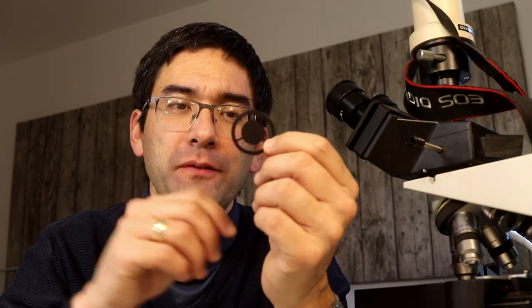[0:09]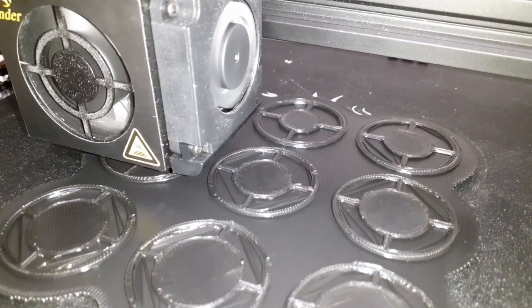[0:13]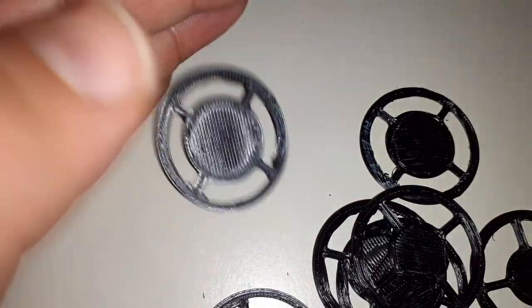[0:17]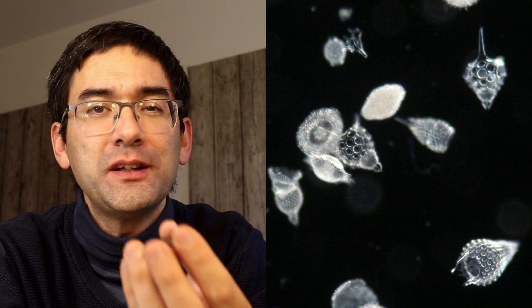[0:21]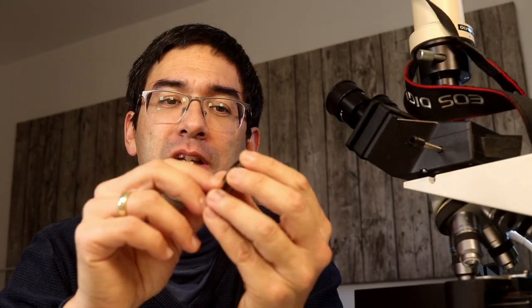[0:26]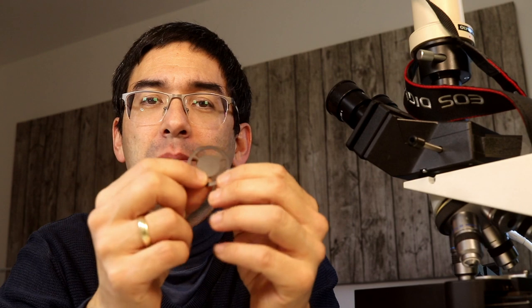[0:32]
And today I want to optimize this filter, and I'm going to be using some 3D printing to try out different sizes and dimensions to find the optimum one. Before I do that, I want to give you a short introduction into what Darkfield is in the first place, for those of you who don't know. And I'm also going to explain a little bit of the theory concerning how the size here determines the quality of the image, and then later on I'll be optimizing the filter here.
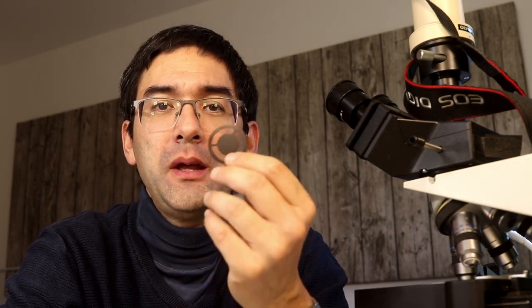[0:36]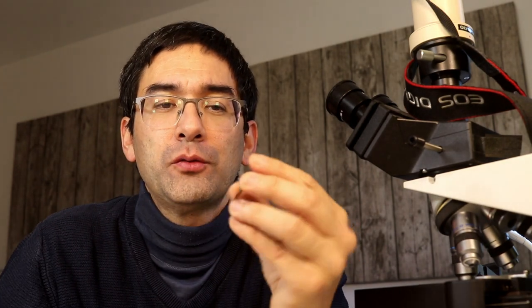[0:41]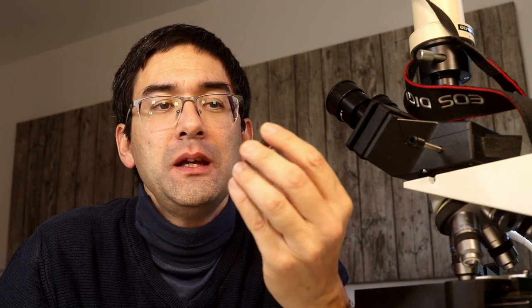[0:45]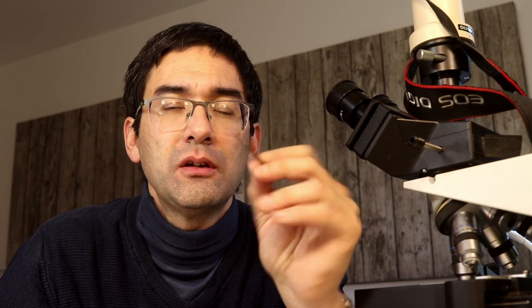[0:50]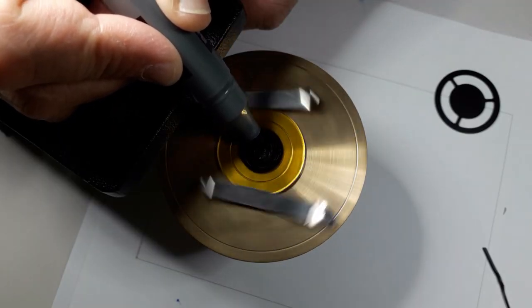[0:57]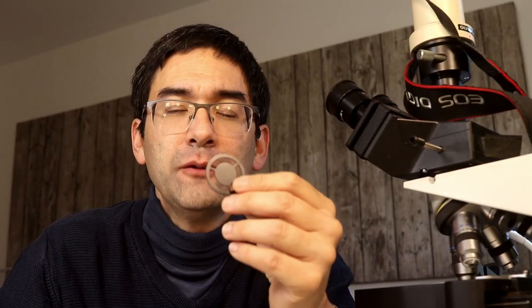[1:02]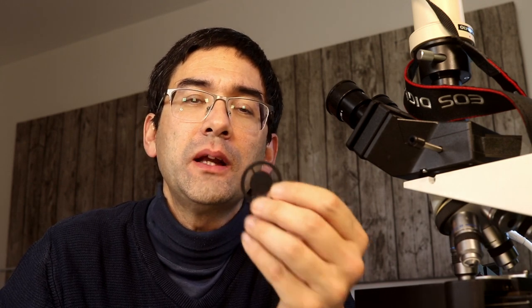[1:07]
So first of all, a dark field patch stop is one of the easiest modifications that you can do to a microscope, and I think every microscope owner should have one of those. If you don't have this, you can easily make them yourselves, either using cardboard or using some black plastic or so. And I made another video that explains different methods, and the link to this video is below. But today I want to try yet a different method. I want to 3D print them, and this way I can very quickly make a large number of them, and I can try out different sizes here.
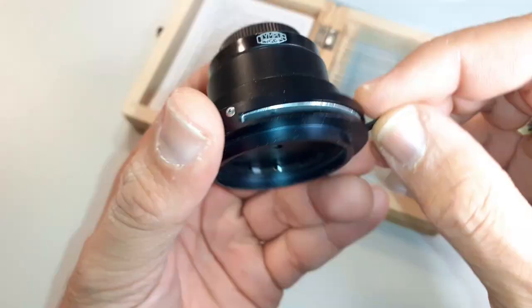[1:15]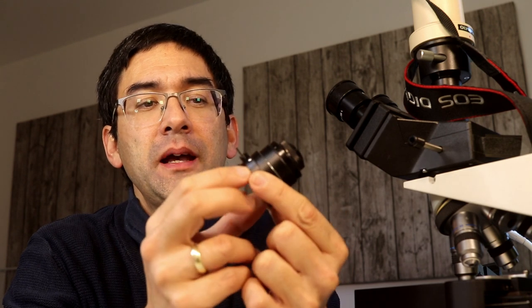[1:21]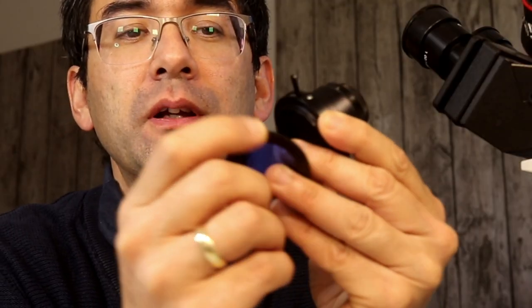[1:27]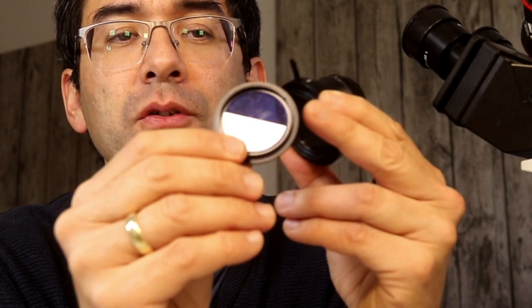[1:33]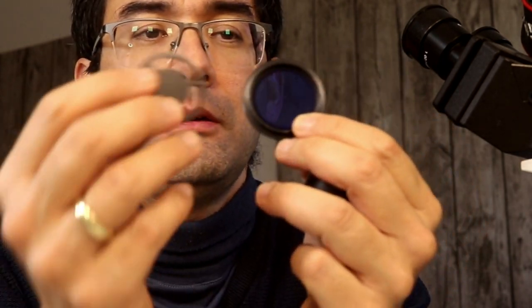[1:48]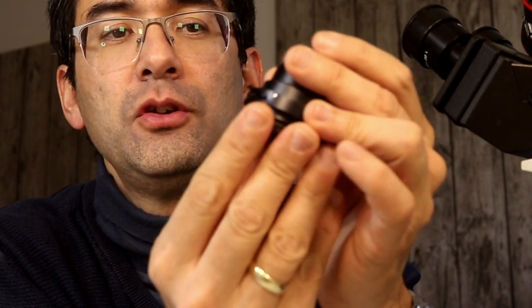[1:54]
So how does this work? What you have here is a microscope condenser, and you find them beneath the stage of your microscope. At least the slightly better microscopes have that. And many of these condensers have either a push-on or a swing-out filter holder. And you can see I can take this out here. Okay, so that is the filter holder. It's blue here to simply reduce the amount of red light that goes through to the camera later on, and it also gives it a little bit more neutral color balance. And in this filter holder here, you can place any variety of different filters and also patch stops, and you just place it in here and you pop it on again, and then you're ready to go.
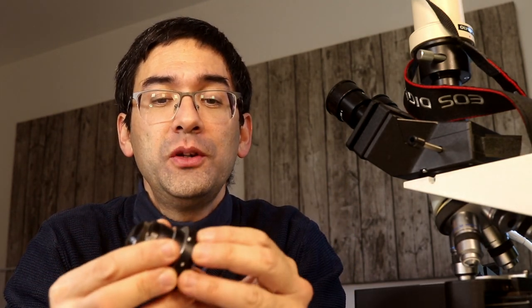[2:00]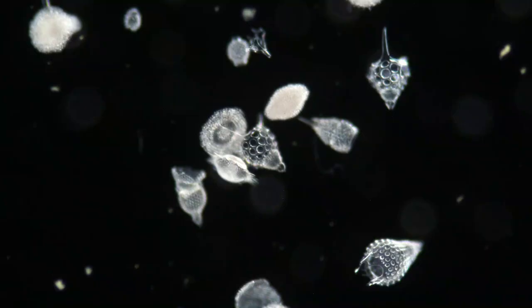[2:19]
And I'm going to show you now how the image changes when you add a patch stop filter. So this picture here shows some radiolarians in regular bright field, and you can see that the radiolarians are dark on a bright background. And when you put in the patch stop filter, the dark field filter, then you can see that the radiolarians start to light up on a dark background.
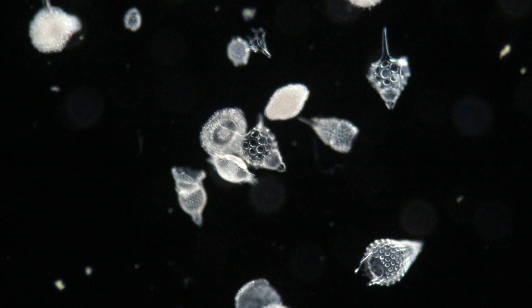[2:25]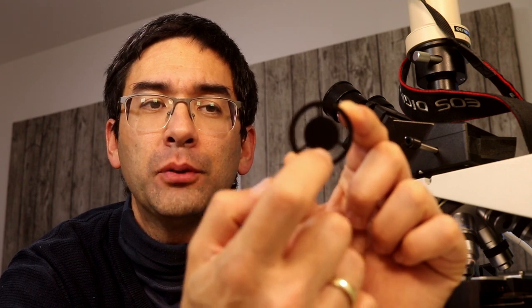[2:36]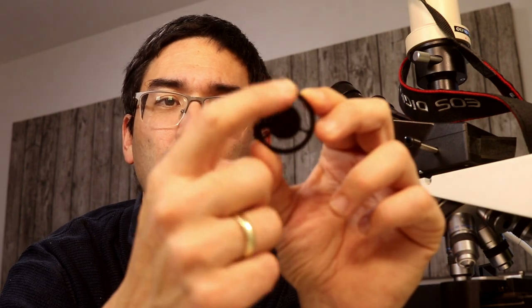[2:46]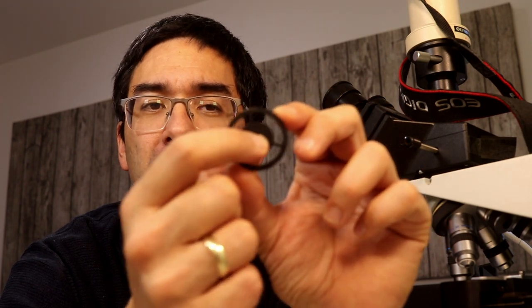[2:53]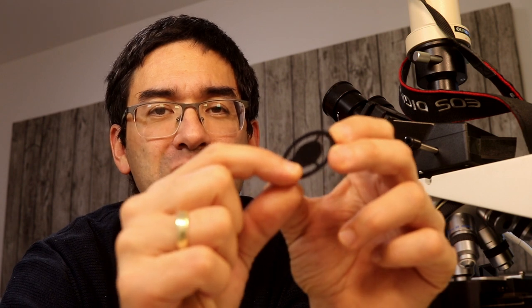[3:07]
So, well, how does this now work? When you look at one of those dark field filters, you're going to see that they have essentially two regions: the central patch stop, which blocks out the main microscope light, and the peripheral annulus. That's this bright part that allows light to go through. The ring here on the outside actually is only there to center the patch stop in the filter holder. It has no real function otherwise. And now what happens is that the central patch stop here blocks out the main microscope light so that the background becomes dark. And the light which strikes the specimen from the periphery is then reflected back into the objective, and that then causes the specimen to light up on a dark background.
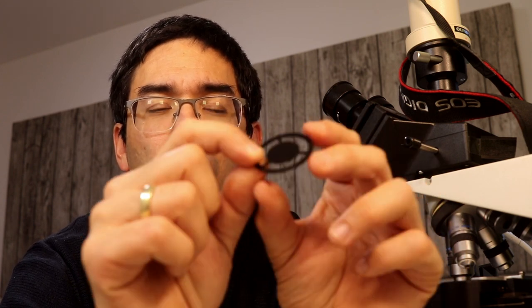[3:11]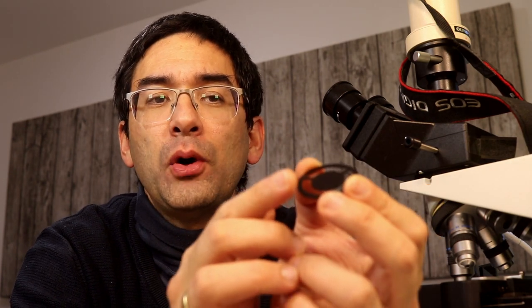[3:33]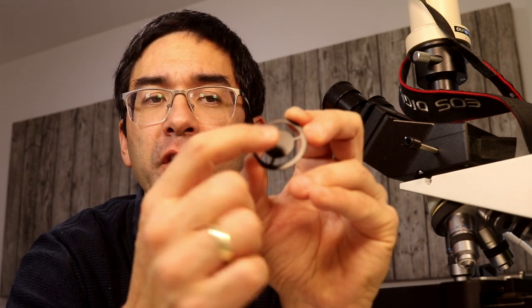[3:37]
And now maybe you're wondering how it's possible for the light which is here on the side to actually hit the specimen, which is located here over the center of the filter. And that is because there is a condenser in between, and this condenser has a lens here, and this lens causes the light rays not to go parallel but to bounce off at an angle. And that's why it's possible for the light to also reach the specimen, which is actually directly over the central
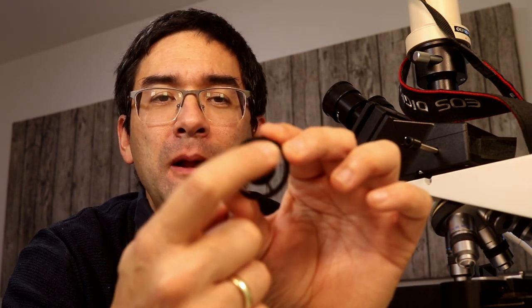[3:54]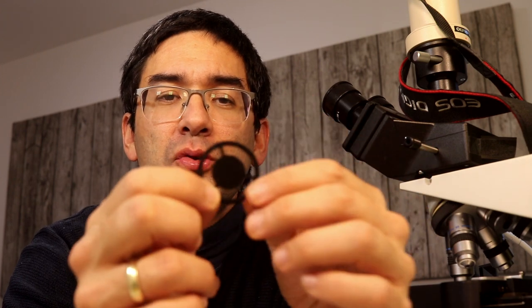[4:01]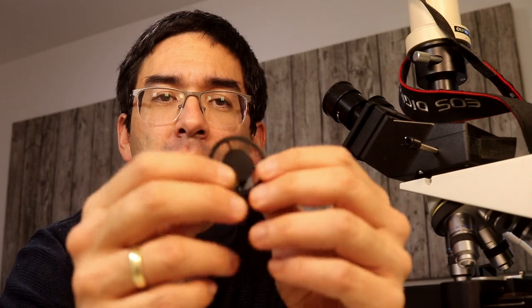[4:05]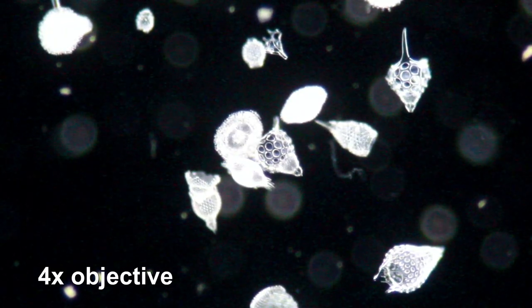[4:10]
black patch stop. However, there is a problem, and one of the problems is that the optimum size of the filter here, of the patch stop, also depends on the so-called numerical aperture of the objective. So this basically means that the higher the magnification, the larger the central patch stop has to be in order to completely block out the light. And I'm going to simply show this effect to you now. So I'm going to use this commercial dark field filter here. And I'll be increasing the magnification from 4 times all the way up to 60 times.
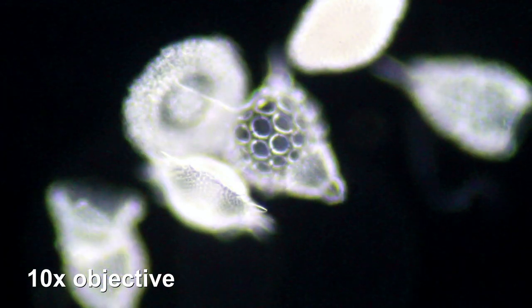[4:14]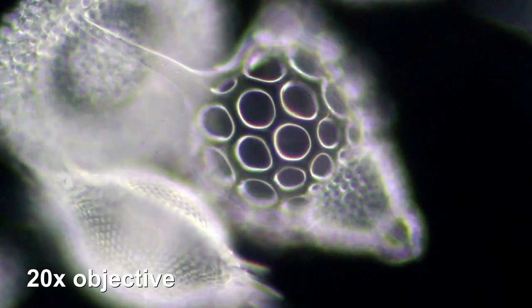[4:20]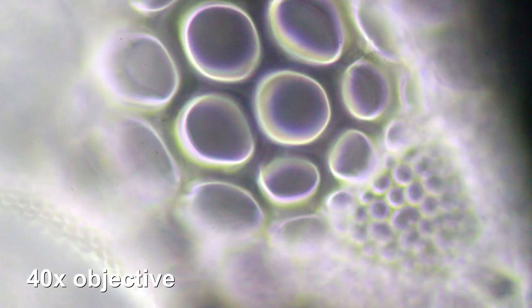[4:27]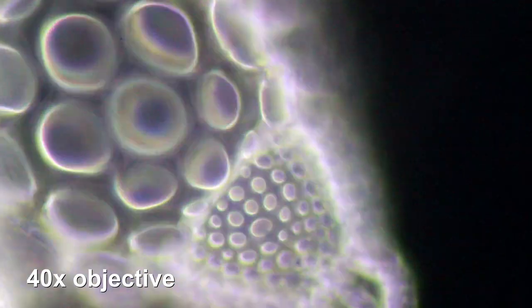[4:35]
And what I want you to do is look at the background, whether the background is still sufficiently dark. By the way, these are radiolarians here, and their refractive index is quite different from the surrounding medium, so that's why they shine up very nicely and they're very good specimens. Okay, so that's with a 40 times objective, and look at the top right corner. Yes, here you see that the background is still sufficiently dark.
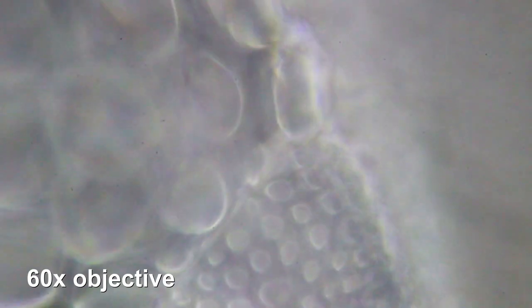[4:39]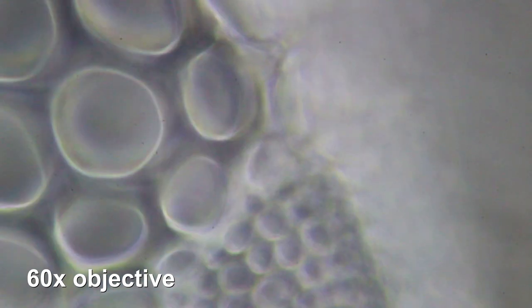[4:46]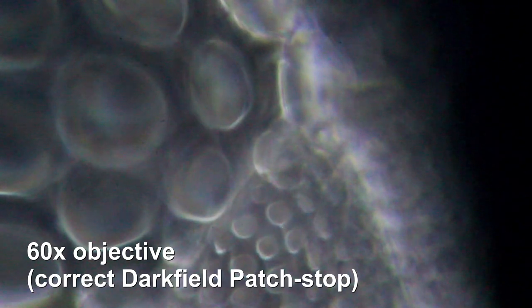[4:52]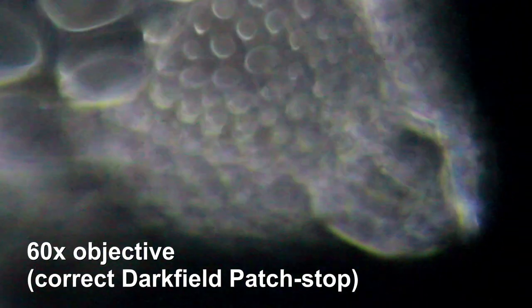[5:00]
So the patch stop filter does still work with a 40 times objective, but now with a 60 times objective, this is basically where it breaks down. The top right corner, as you can see, is now gray. It's not black anymore. And now with a correct patch stop, the one I made, it shows that it's black. That's the way it's supposed to be, but it's a different patch stop, one that is a little bit larger in the center.
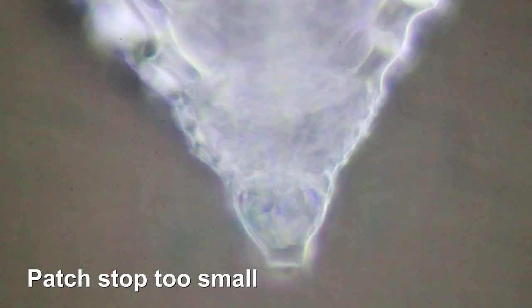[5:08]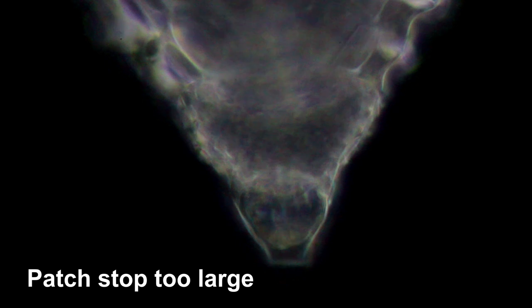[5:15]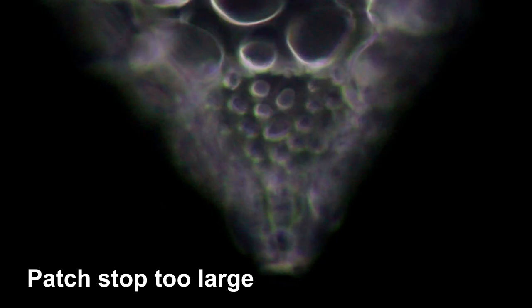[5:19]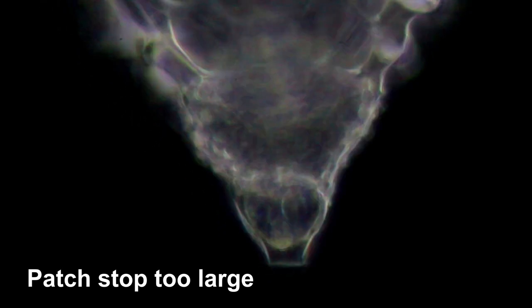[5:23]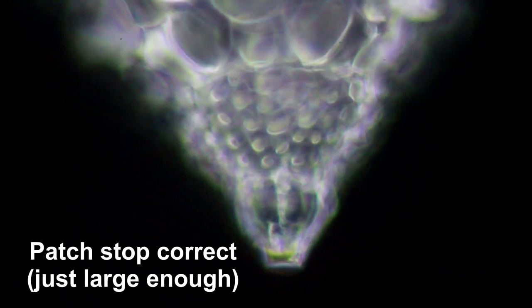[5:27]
We're going to try it again. This one shows one where the patch stop is too small. The background is pretty bright. I'm focusing back and forth a little bit here so that you can see this better. This one, the patch stop is too large, and the specimen itself, while you can see the tip of the radiolarian, is still too dark. And when you make the patch stop just a little bit smaller, just the right size, but not too small, then it looks like this, okay?
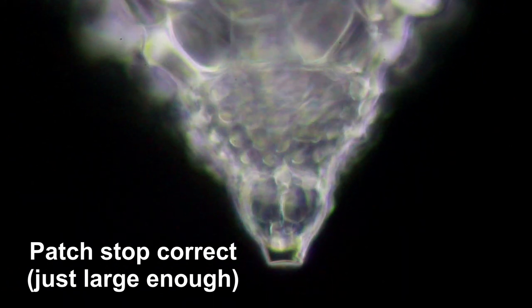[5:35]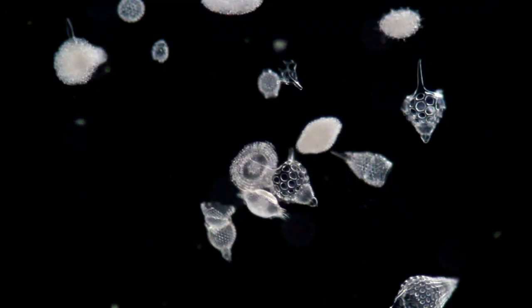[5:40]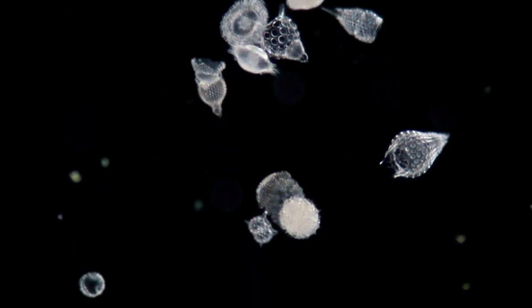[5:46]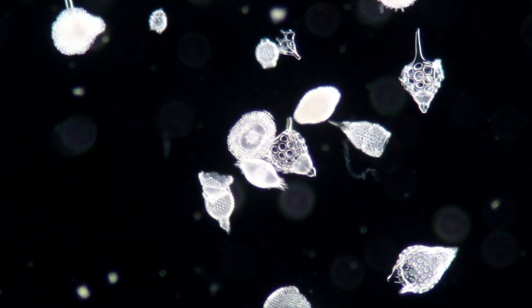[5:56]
And I've done it like this, and I did not adjust the camera settings here, so it did not automatically correct for the exposure. So you can see that the size of the correct patch stop has a significant importance here. Same thing here. Here the patch stop size for the radiolarian specimens is a little bit too large. It looks fine, but the specimens could be a little bit brighter. I'm just going to switch over, and this is basically the way it's supposed to be.
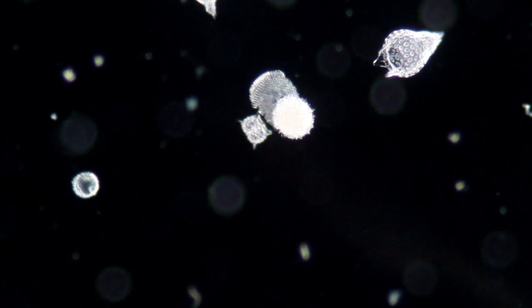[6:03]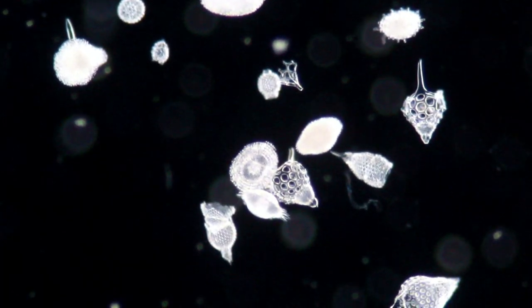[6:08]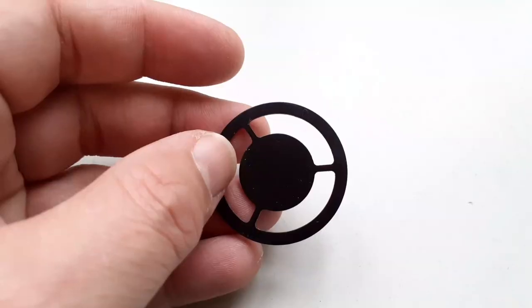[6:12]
So I quickly changed the filter, and you can also see that there are some spots in the background. This also means that there's a little bit more dust visible now, and so you see that there is also a slight disadvantage of actually seeing a little bit more.
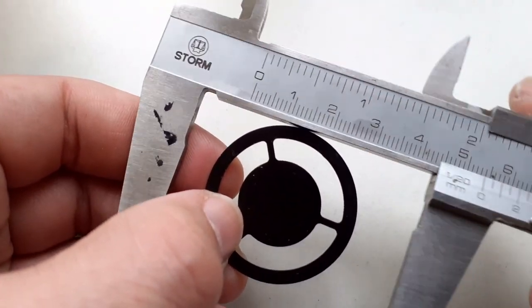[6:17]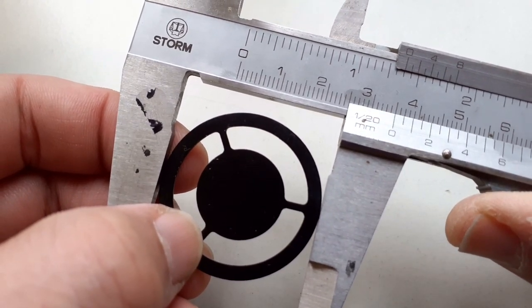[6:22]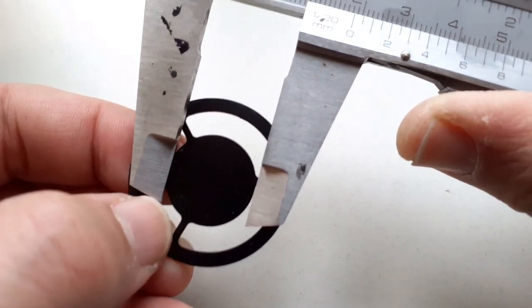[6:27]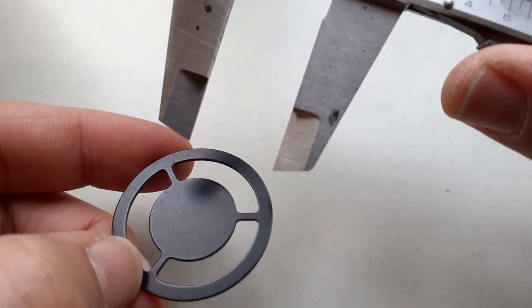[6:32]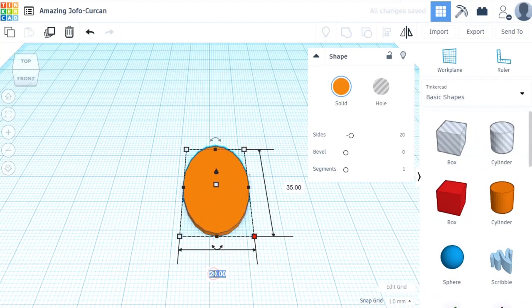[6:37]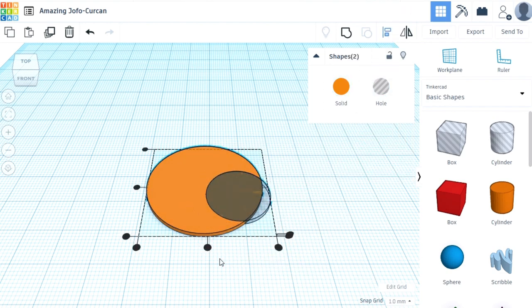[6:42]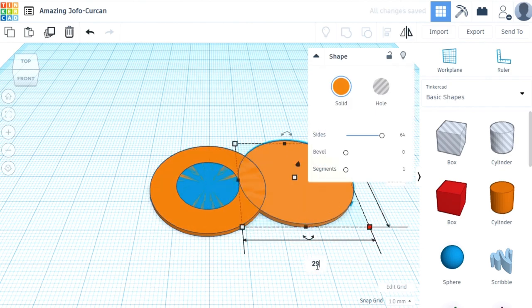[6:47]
Well, that was the commercial patch stop filter, and now I wanted to design my own. I started out by simply using this as a basis, and I measured the diameter and the central patch stop and all of these things simply to have a starting place. Then I designed the whole thing on the computer, using the free online program called Tinkercad. All you need is an account, you sign in, and you can edit things directly in your web browser. It's quite easy to use. I only watched a 5-minute introductory video on YouTube, and then I already knew how to use the program.
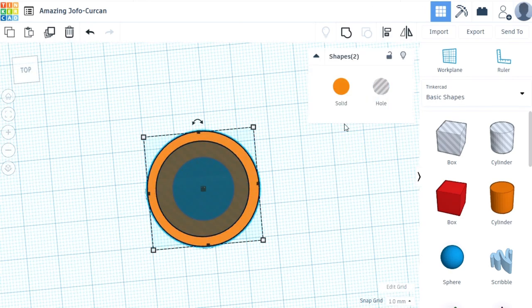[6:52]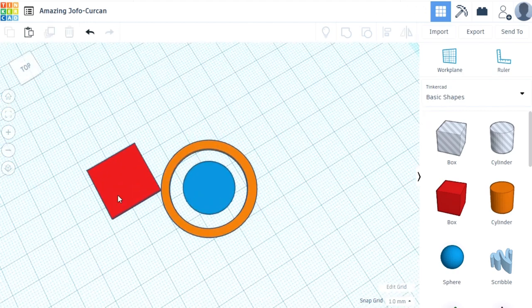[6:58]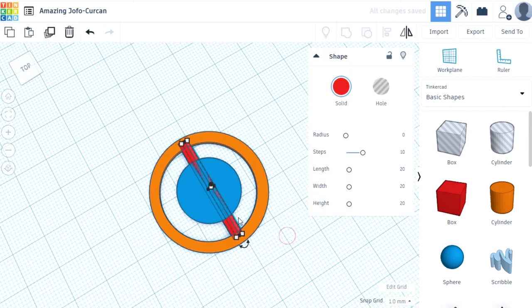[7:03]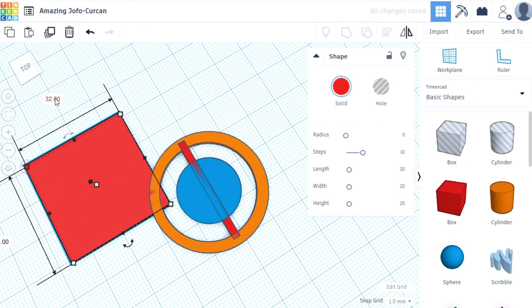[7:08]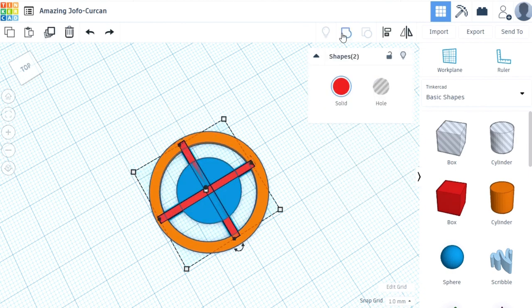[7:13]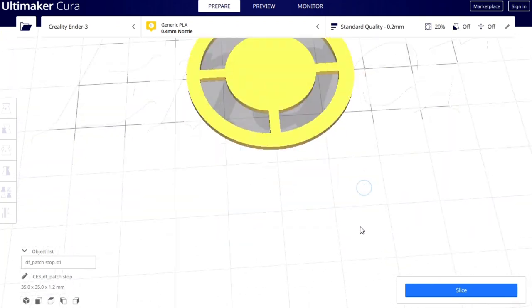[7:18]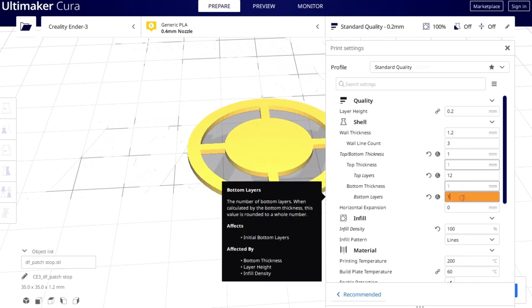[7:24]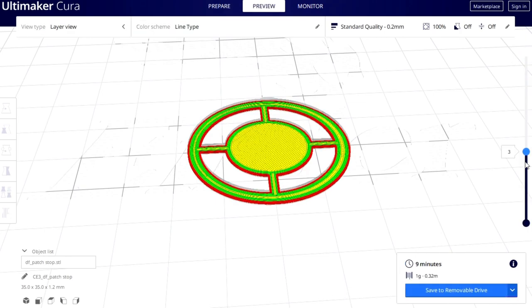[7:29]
I've never done CAD design before, so it's the first time that I'm doing this. I tried to replicate the same filter a little bit, and that's basically how it works. Then you export the file, and the file is imported into a so-called slicer program. There are also several free ones available. One of them also came along with my 3D printer. This slicer program converts the shape into so-called G-code, which is then understood by the 3D printer to be printed. So you see, you have to use two different programs here.
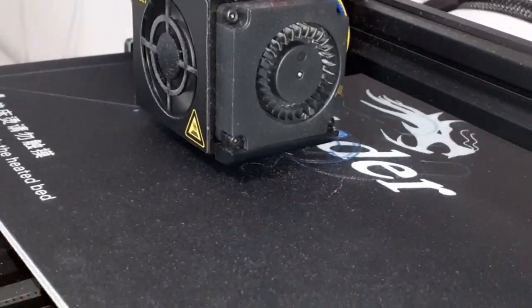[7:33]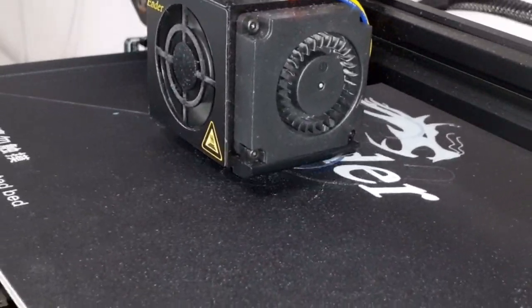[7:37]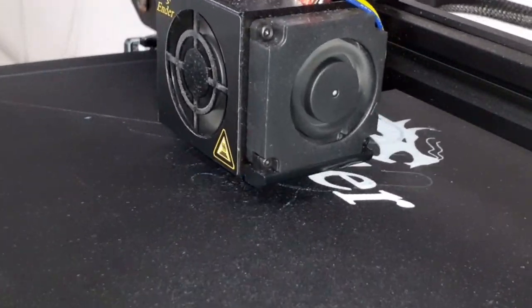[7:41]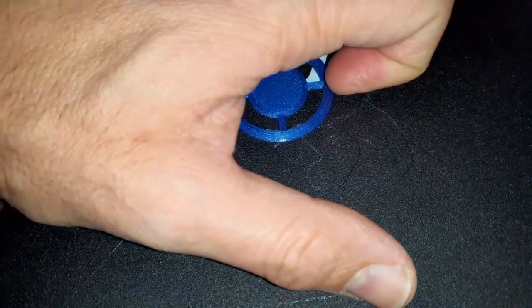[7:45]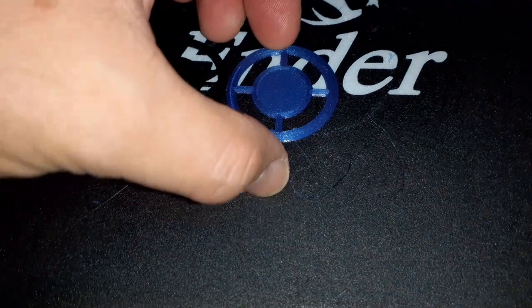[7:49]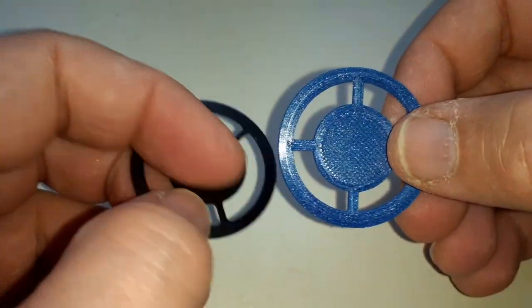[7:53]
I'm now showing the printing in time lapse again. After a couple of minutes, I had my filter ready. And if you're wondering why I'm printing it using blue filament, the reason is simply that it's the one that I had in place right now. I had some problems getting it off, so it took me a little bit. And this is how it looks, and I'm quite happy.
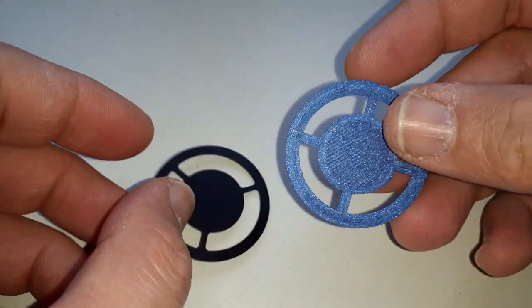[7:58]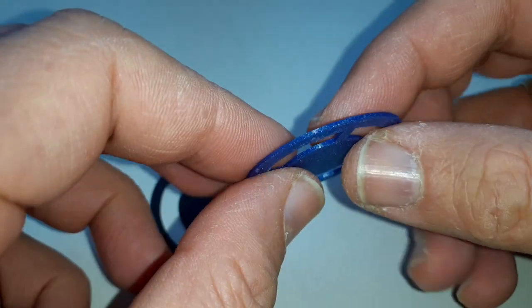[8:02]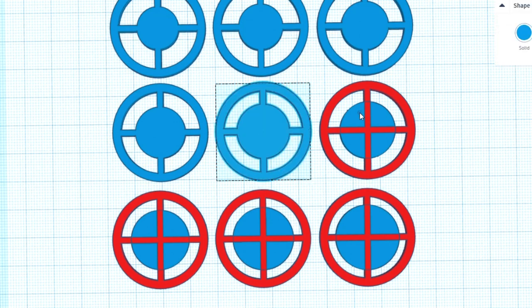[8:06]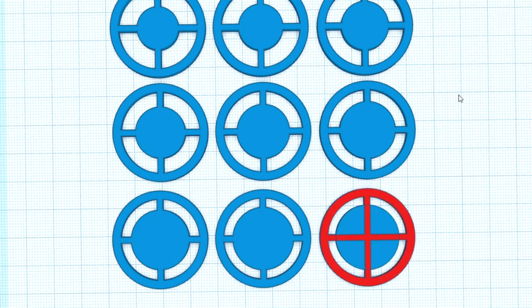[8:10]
So I decided to put it into the filter holder, and I had to make some size adjustments. It was a little bit too big, but I made the adjustments, and then I redesigned all of them again with different sizes of patch stops. And now I've got 9 of them here.
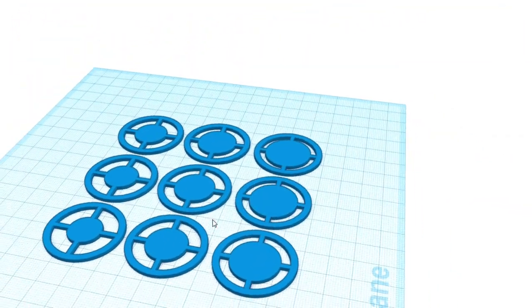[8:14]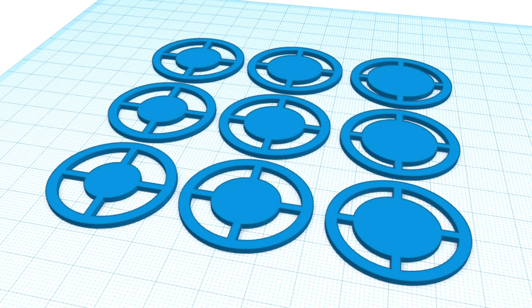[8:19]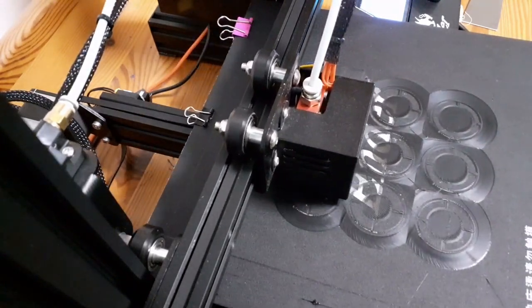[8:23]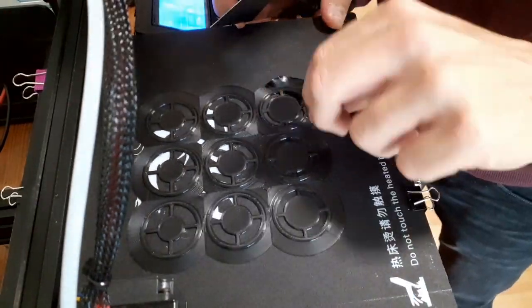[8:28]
And I ended up printing them as well to test out which one is the best one. So here I'm printing all 9 of them. And that's how it looks like after a couple of minutes.
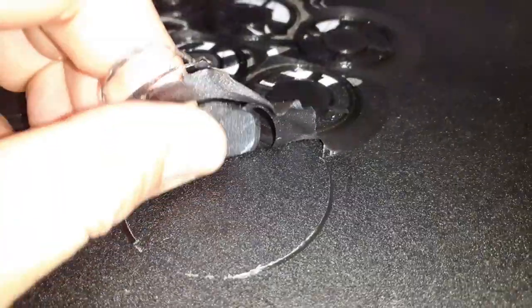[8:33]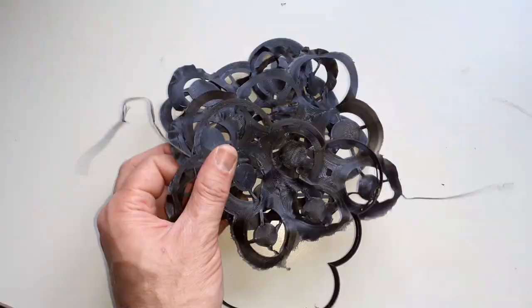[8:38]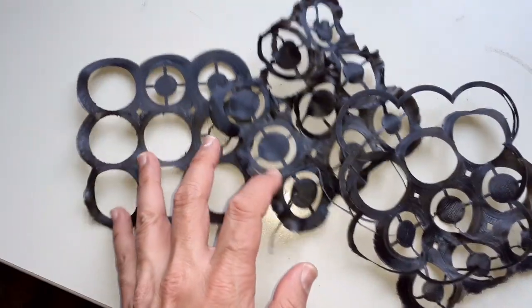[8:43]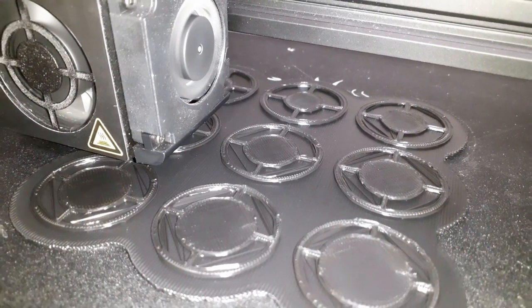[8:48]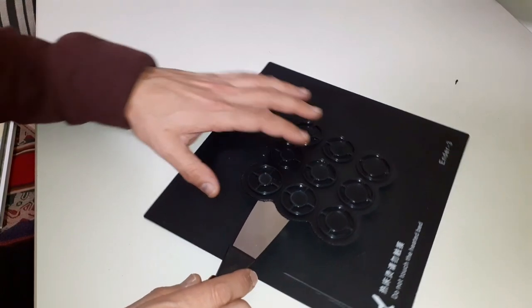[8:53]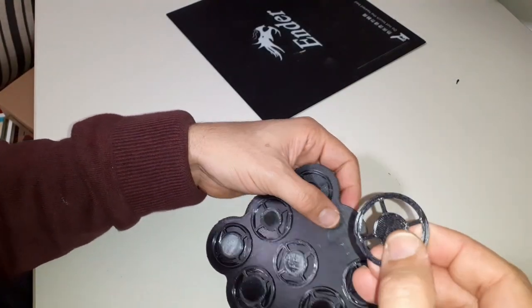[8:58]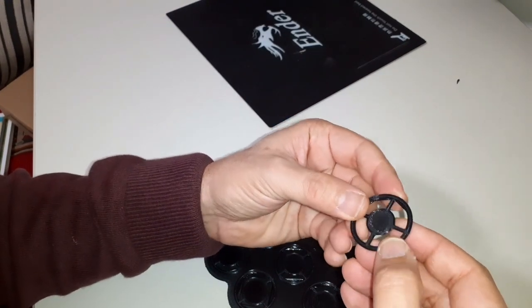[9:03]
And the thing is that I was a little bit not so successful because I had some problems actually getting it off. So I had to reprint everything again a little bit, so this one did not really work very well. So I had several problems and several mistakes and several tries I had to do until I found the correct way. Yeah, this one here, that was actually the one that worked. I printed it on a raft, and this went off quite easily, and it could separate the filters much more easily here. Yeah, and then I simply put them in and tried them out, okay?
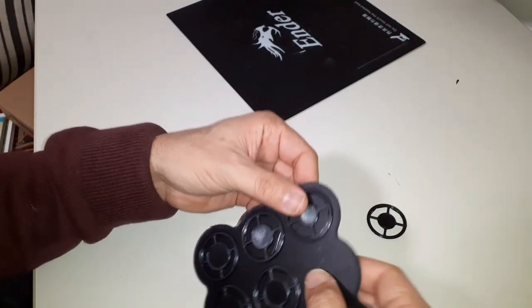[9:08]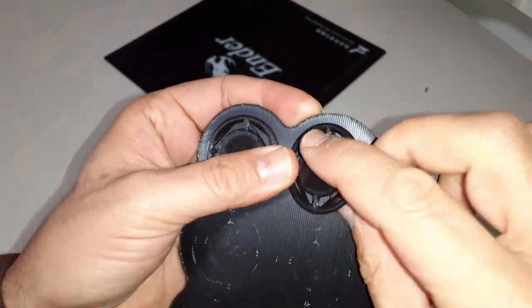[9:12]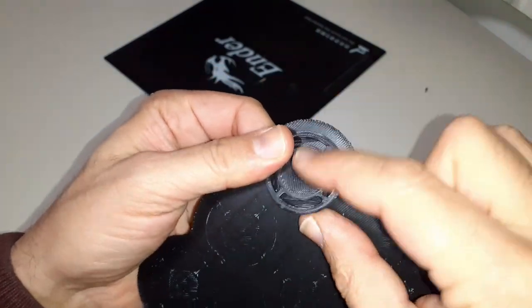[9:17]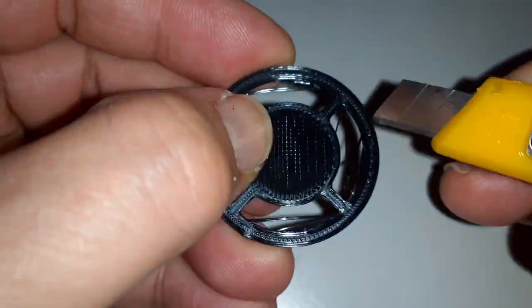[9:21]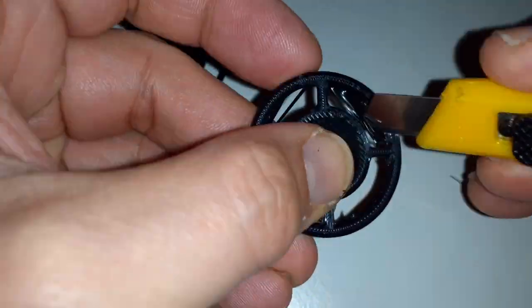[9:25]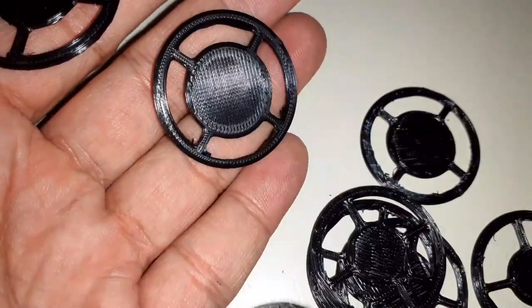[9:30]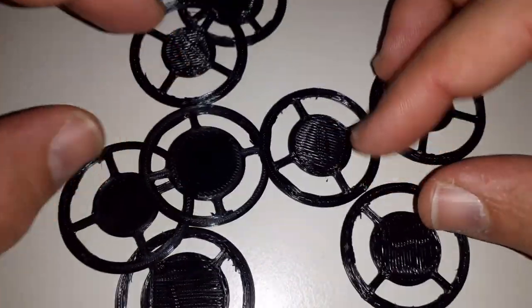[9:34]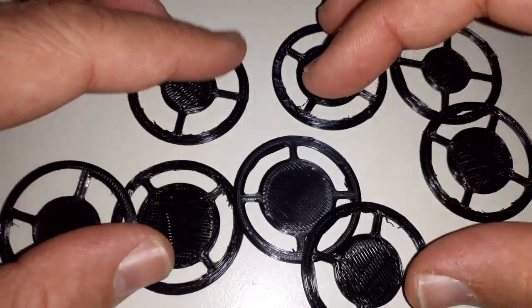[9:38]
So it's also a little bit of a waste of plastic, but you can see that there are some strings. It pulled some of these strings here, so the filter is not perfect, and therefore I had to do some post-processing, so to say. I had to cut away those excess strings. Normally I would probably print them again, but I simply decided, who cares? It's good enough for simply trying it out. And I've got then my 9, this way I produced my 9 filters here.
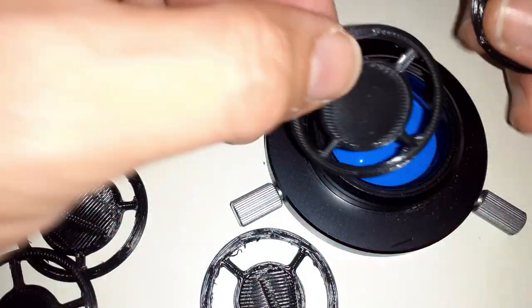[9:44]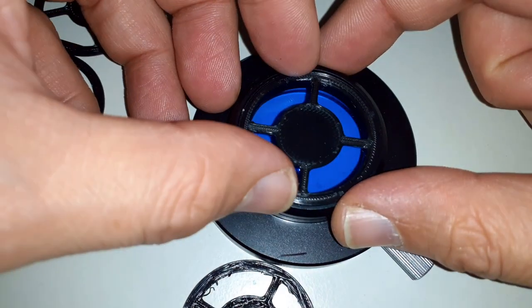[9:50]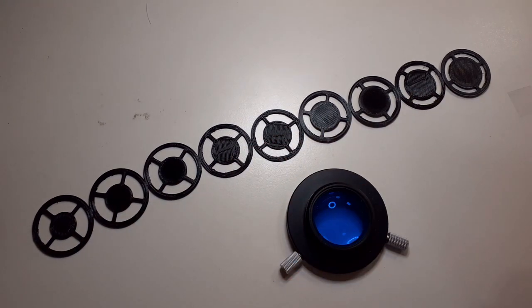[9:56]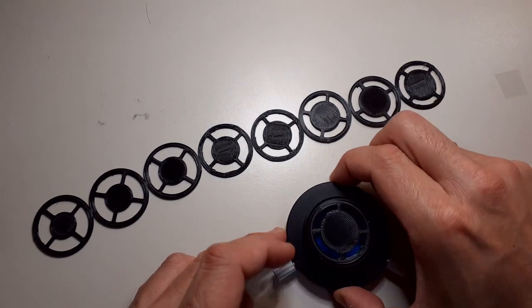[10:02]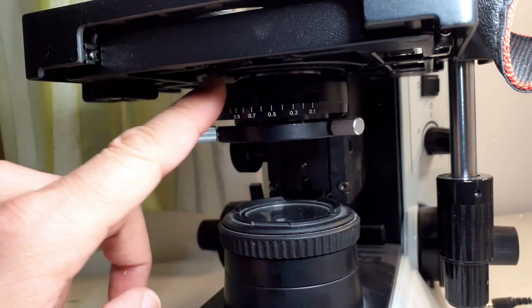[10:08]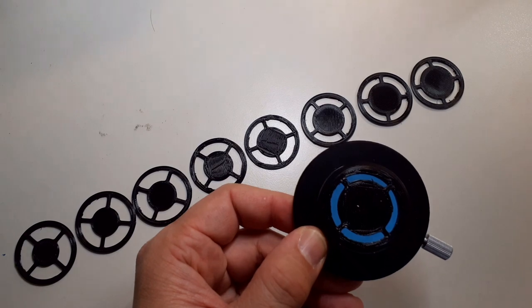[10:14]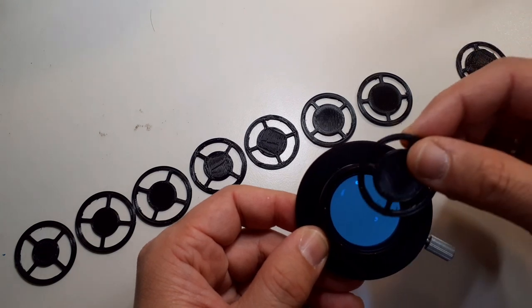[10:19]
Okay, well, it's time to test them. I simply placed them into my filter holder. I'm now checking whether they fit well, and they all fit perfectly. And I ranged them now from the smallest to the largest patch stop, and I'm going to test them now individually. I'm going to start off with the one on the right side here, place it into the filter holder. It goes, of course, into the condenser, and now I'm checking all of the microscope objectives, of course. You have to open the diaphragm here. After checked all of them, I'm going to simply replace the filter with the next filter, just like this. Then I put it again into the microscope, and I'm going to test them.
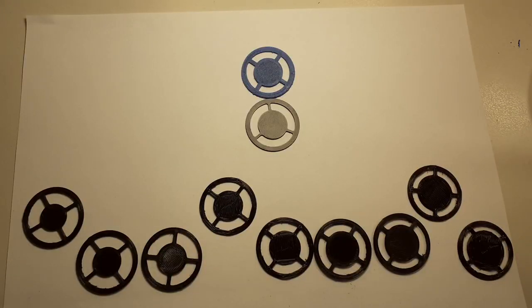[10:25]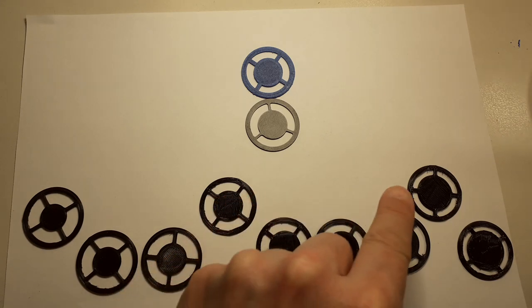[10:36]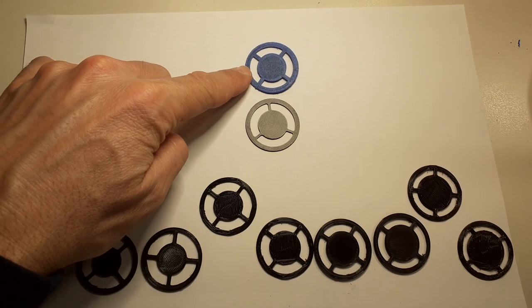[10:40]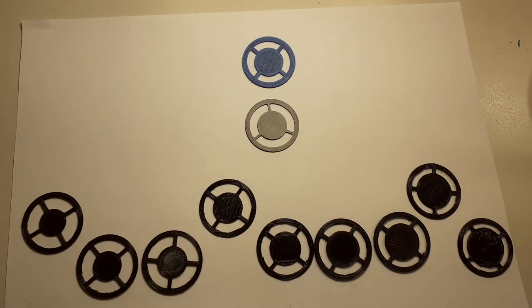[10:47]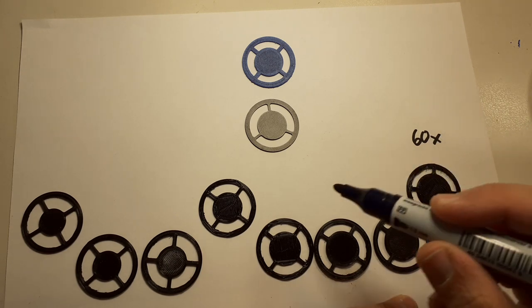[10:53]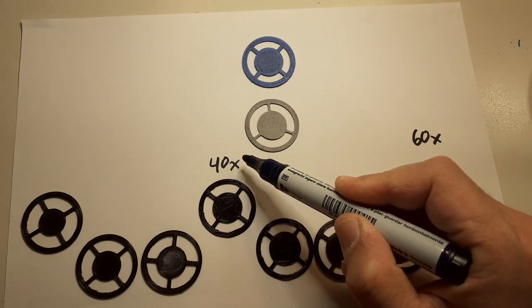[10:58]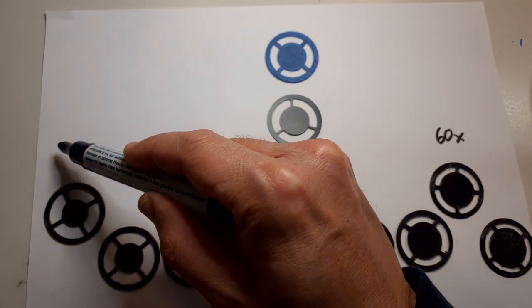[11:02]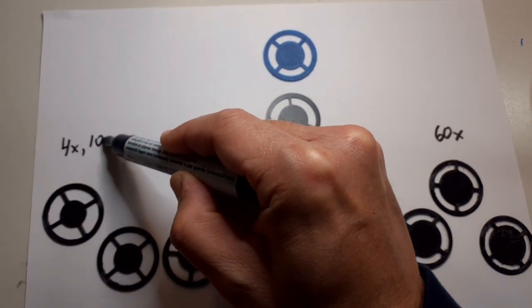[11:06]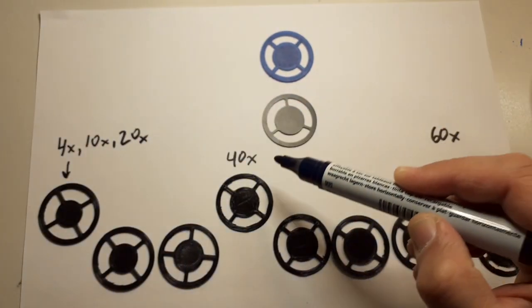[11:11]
And what I found out is the following. Here I arranged them. Basically, again, based on size, but three of the filters I moved a little bit upwards because these are the optimum ones. So this one, and this one over there, these are the best filters for the different magnifications. And this is the blue one, and that's the commercially made one. Yeah, and that's basically a little bit in the center right now, as you can see. So the one on the right side works best for the 60 times magnifying objective. The one in the middle works best for the 40 times magnifying objective, and the one on the left side is the one that works best for several objectives, for the 4 times, the 10 times, and also the 20 times objective. So this one works fine for all three of them.
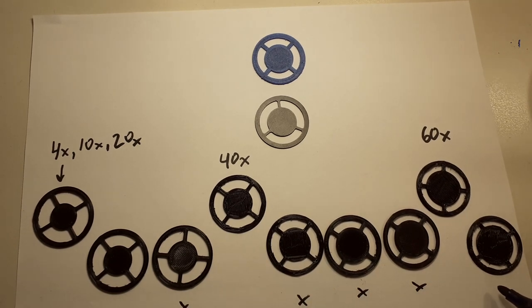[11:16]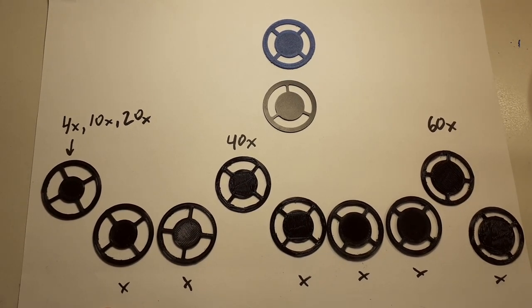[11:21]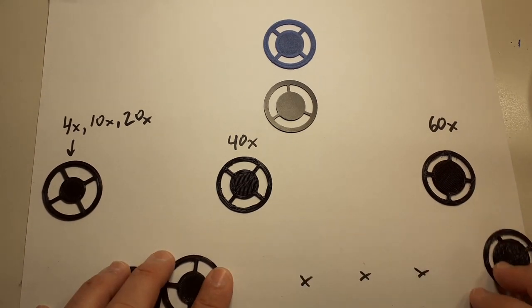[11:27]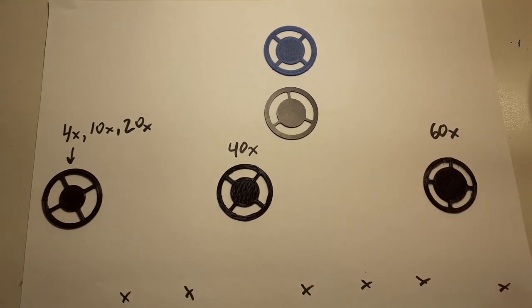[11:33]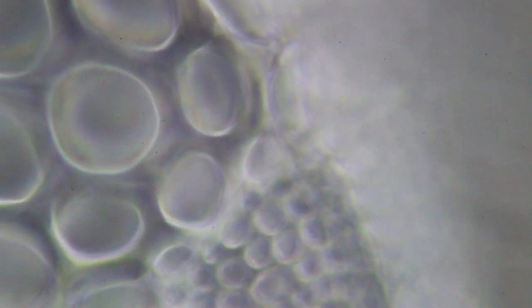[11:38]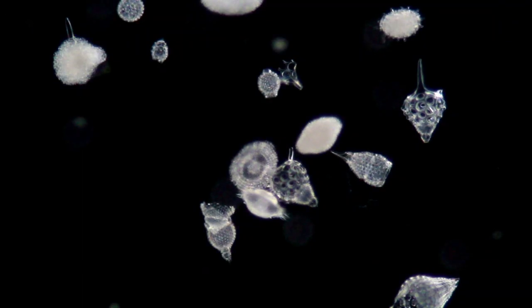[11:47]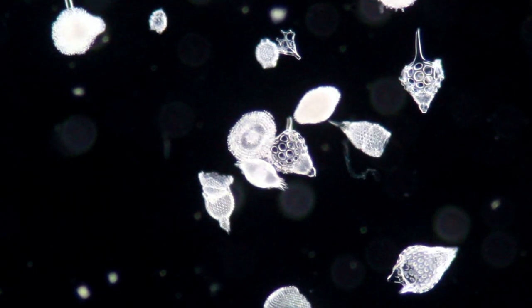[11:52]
All of the others I'm just going to throw away because they are not optimal. Either they cover too much or too little of the image and of the light. Yeah, and you can see that the ones on the top, the blue one and the commercially made one, well, they are a little bit larger than the one intended to be for the 40 times, but way smaller than for the 60 times objective, and therefore it didn't work. So let's try it again. This one is the one from the 60 times, and now this one is with the right patch stop, and also here again this one is the original one, and this one is the one with the correct patch stop.
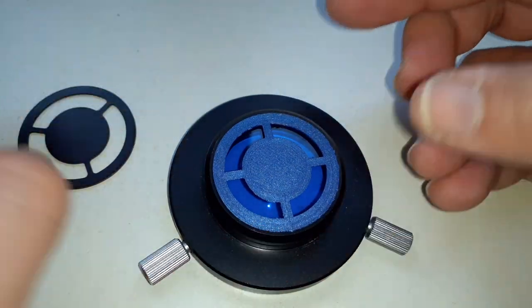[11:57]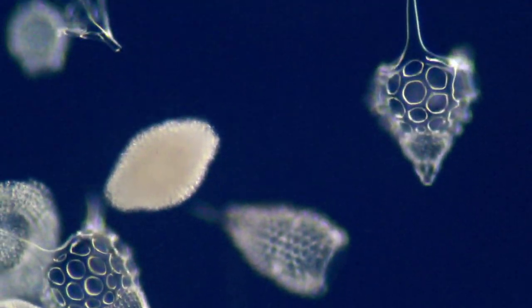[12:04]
So what about the blue one? I did not show you the blue one yet. Well, this is how it looks with the blue one. A nice dark blue background, a little bit like Rheinberg illumination. So even the blue one does have its uses, and it looks also quite nice.